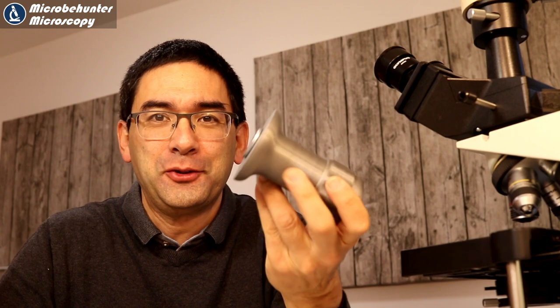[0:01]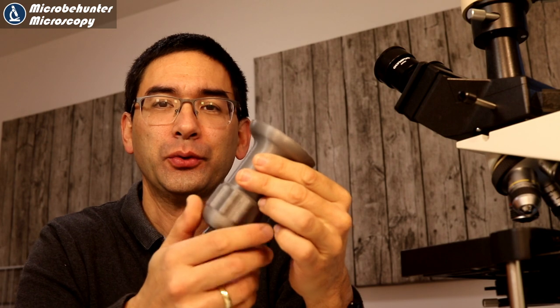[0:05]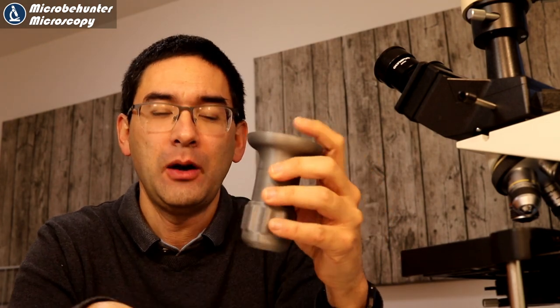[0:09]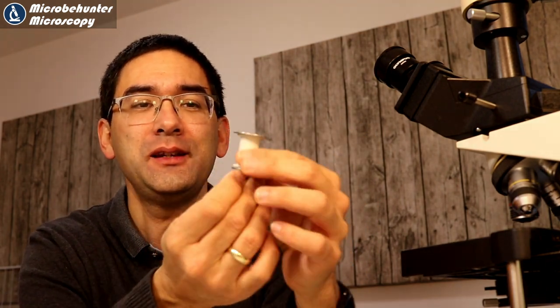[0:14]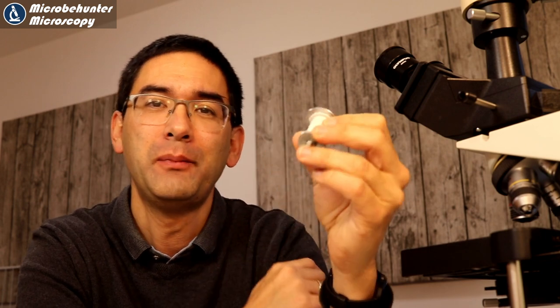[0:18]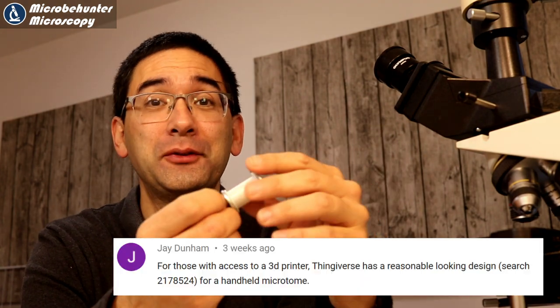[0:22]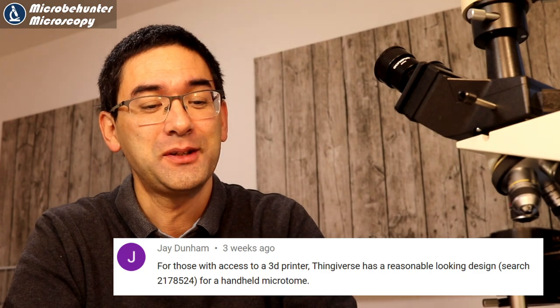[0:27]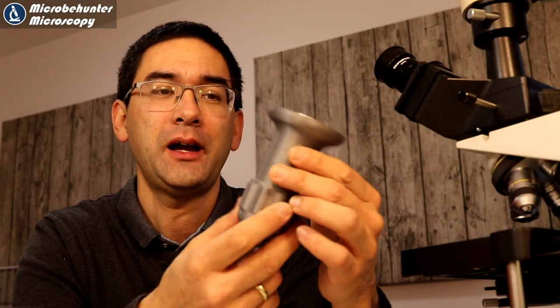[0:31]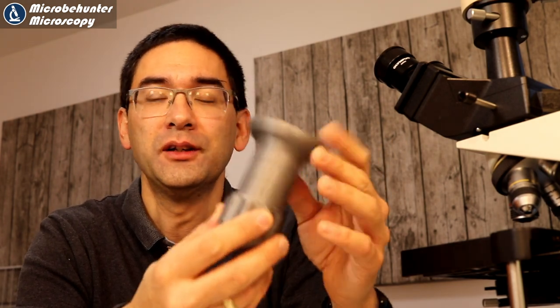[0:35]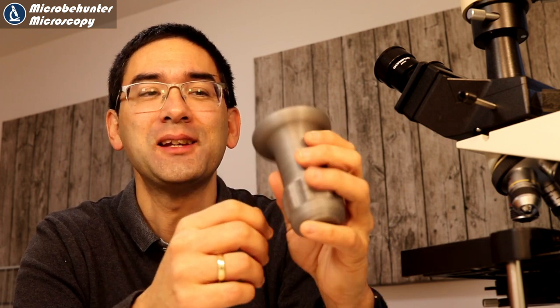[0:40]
In a previous video I already showed you how to make this small do-it-yourself microtome, and one of my viewers actually wrote a comment and said that if you have a 3D printer then you could also print your own microtome, and this is what I've done. So I downloaded the file for this microtome and I 3D printed it, and I'm going to show you how I have done that, and then at the end I'm also going to test whether it actually works sufficiently well.
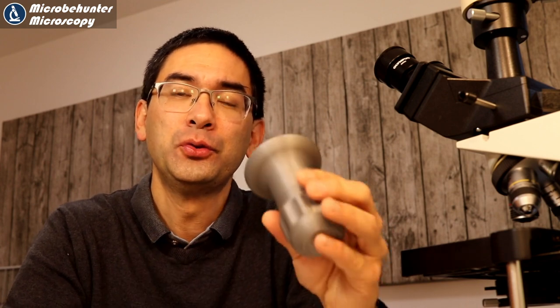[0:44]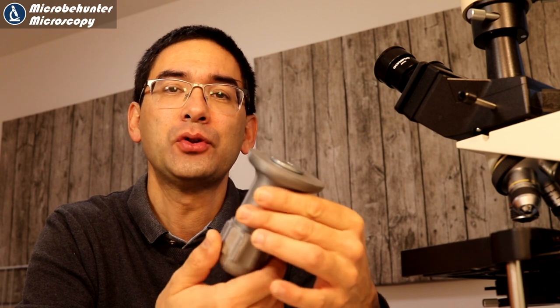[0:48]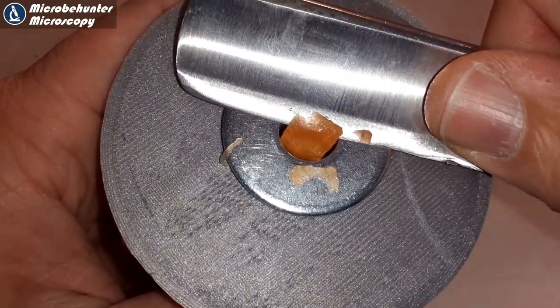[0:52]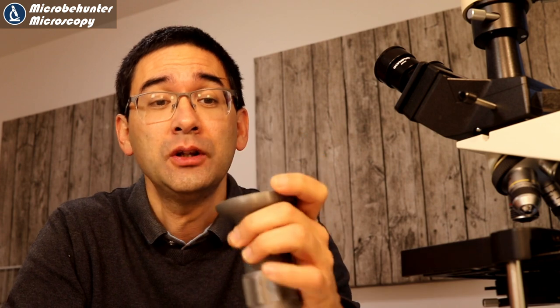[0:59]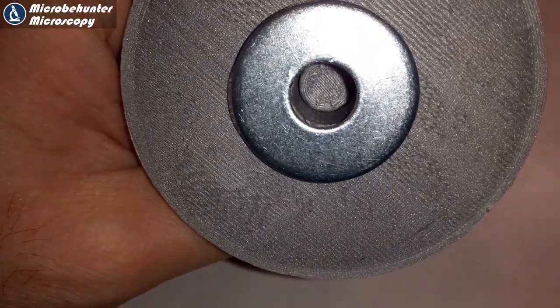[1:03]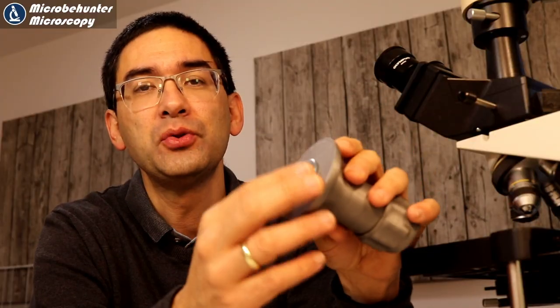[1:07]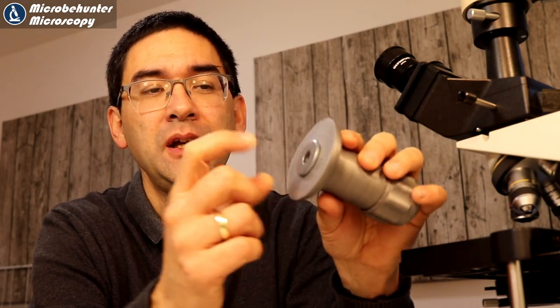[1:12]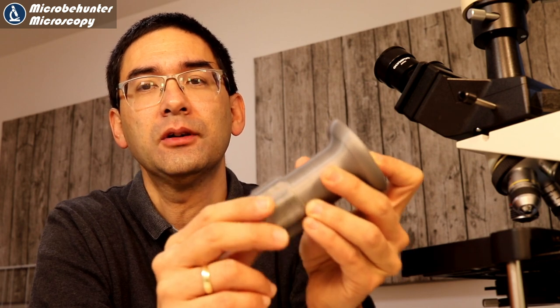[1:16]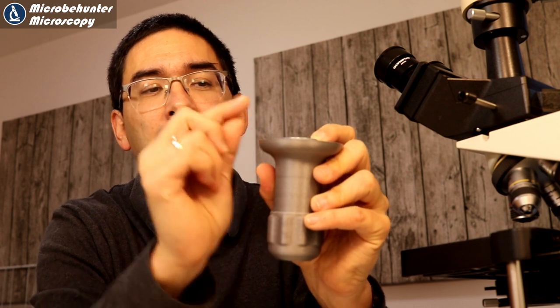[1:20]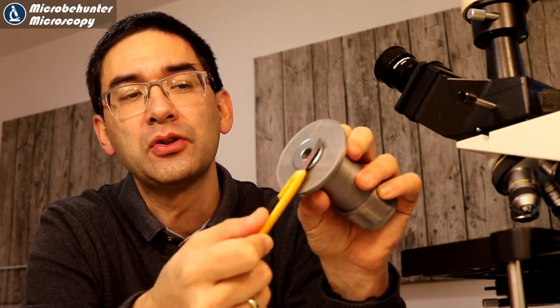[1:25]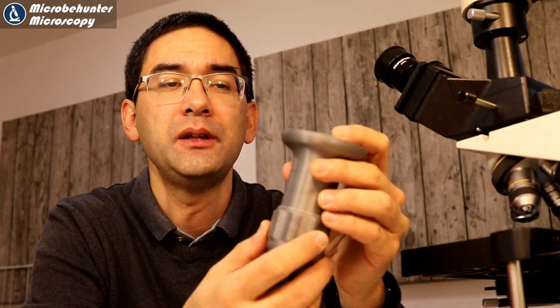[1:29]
First of all, for those of you who do not know what a microtome is, you use microtomes for microscopy to make very thin cuts of tissue. You need approximately a one cell layer thick section, and what you do is, there is a hole here in the microtome and you put the specimen into the hole. For example, I'm going to be using a carrot because that's quite a suitable one to cut. You put it in here, and by turning the handle down here, you advance the specimen out a little bit, and then you are able to use a sharp knife to slice it, and this can give you extremely thin cuts.
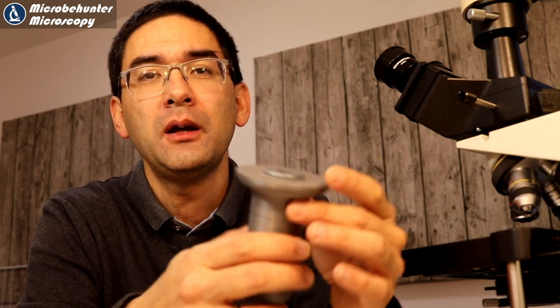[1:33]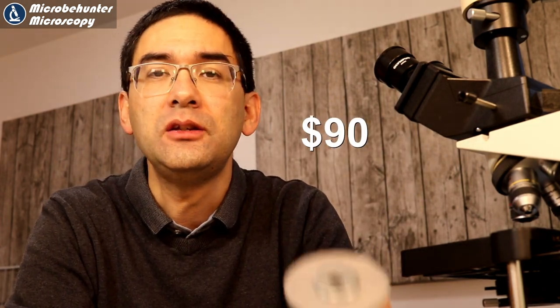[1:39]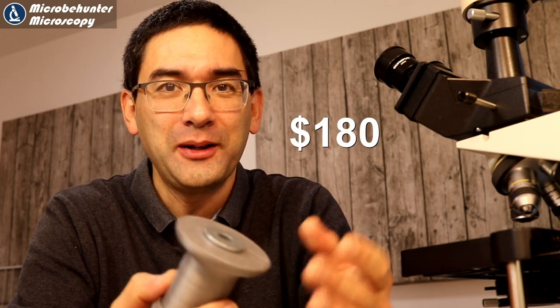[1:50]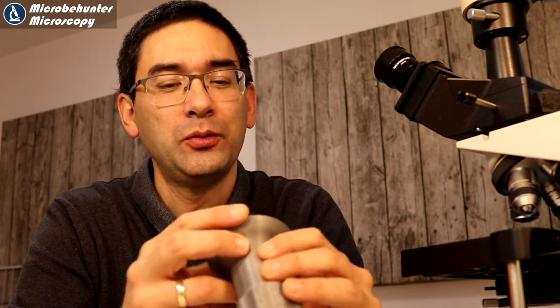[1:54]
Now there are of course commercial microtomes available. Low-cost commercial microtomes cost around, I've bought some for about 70 to 80 euros. But if you already have access to a 3D printer, which mine cost only about twice as much, 150 to 160 euros, so they're quite cheap already, it's also something that you might want to try, and I also wanted to simply try it out. So let's get started.
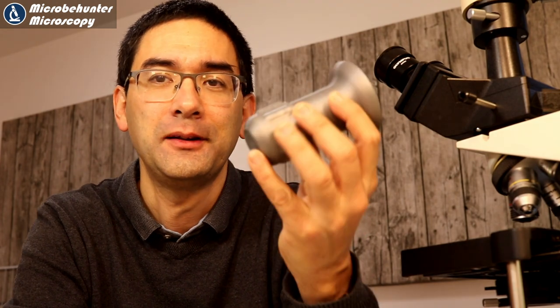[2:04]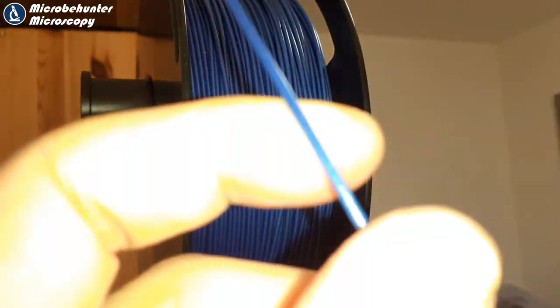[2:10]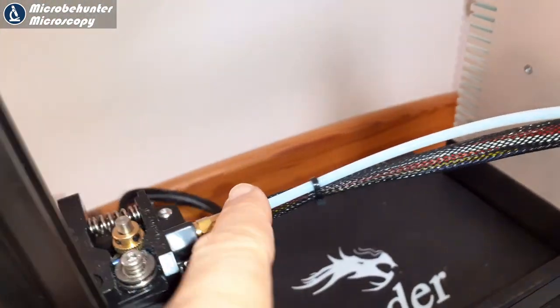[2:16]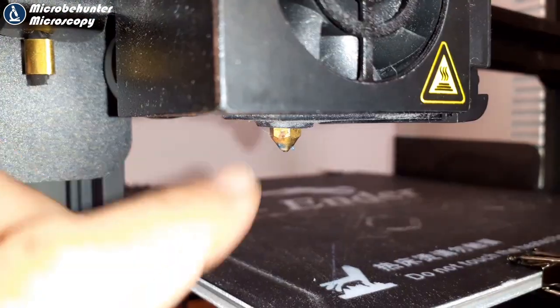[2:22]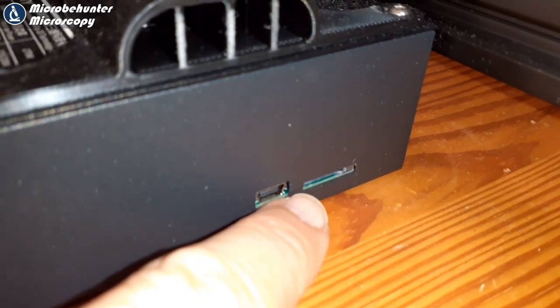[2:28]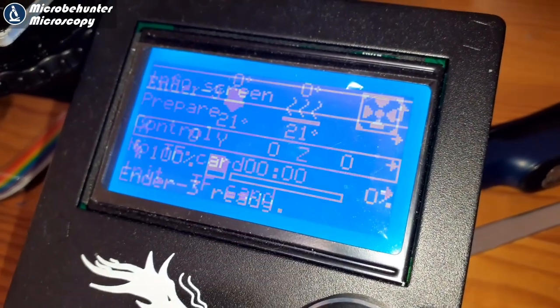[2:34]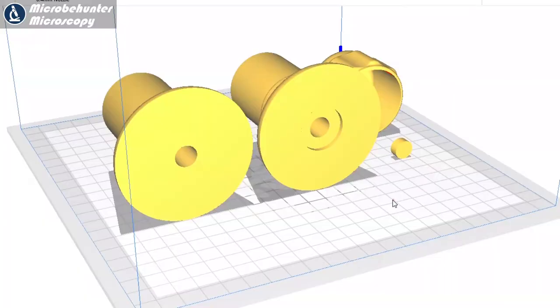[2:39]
I'm first going to show you my 3D printer and how that works, and then I'm going to be 3D printing this microtome. The name of the plastic used is PLA. It melts at a temperature of around 200 degrees centigrade. It's fed into the 3D printer on one side here, goes in this tube all the way down to the nozzle, and it's the nozzle that heats up to 200 degrees. And then a little bit like a glue gun, it extrudes the molten material. There is an SD card reader, so the file that is supposed to be printed is directly put into the computer of the 3D printer, and there is also a control interface where you can make all of the necessary adjustments. Well, I downloaded the file from Thingiverse.
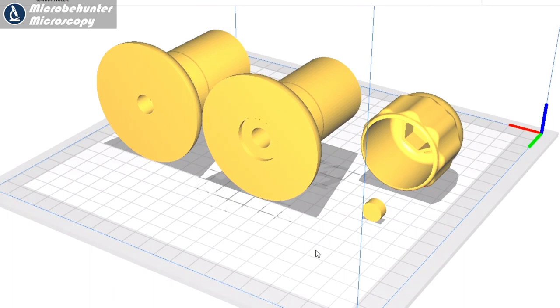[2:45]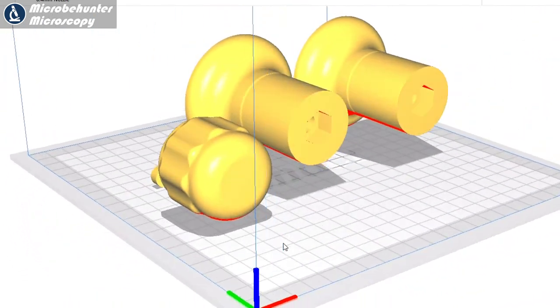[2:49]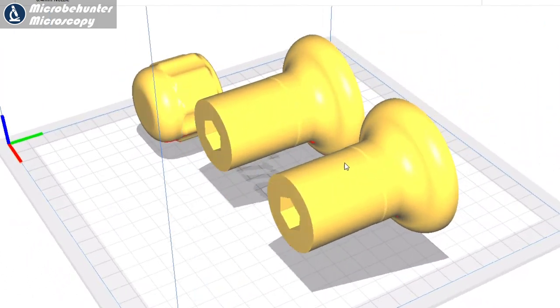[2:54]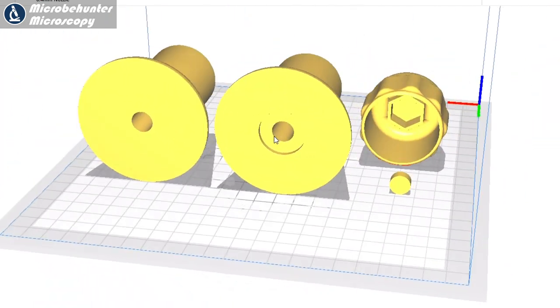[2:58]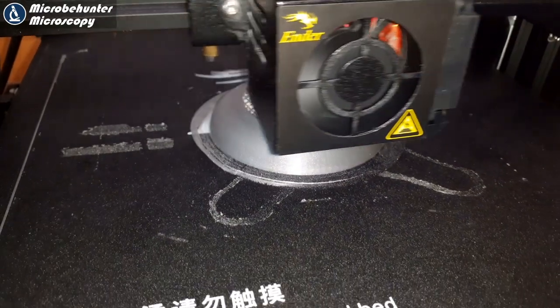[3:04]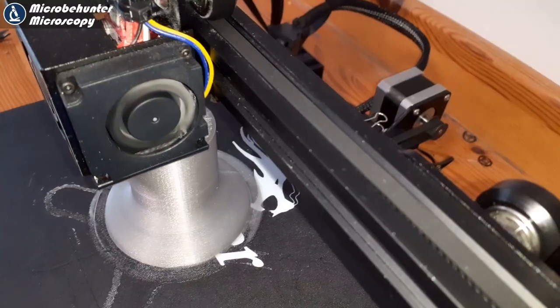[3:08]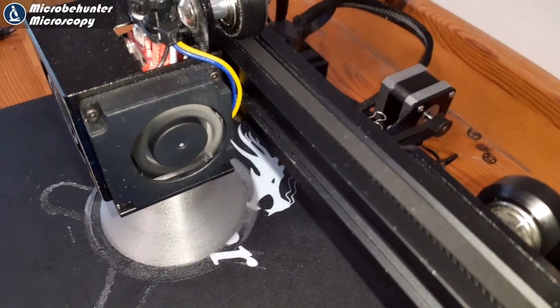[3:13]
Thank you to the person who designed this microtome. As you can see, there are two different versions here. I'm going to talk about this a little bit later. I have chosen one version, and in this program, you prepare the file for 3D printing. There are three parts to this microtome. Printing the microtome actually took quite a long time, several hours. I did speed up the printing process, but then the quality was not so good. It was not quite as regular, but it's fine.
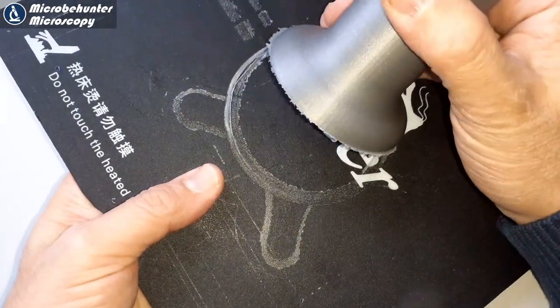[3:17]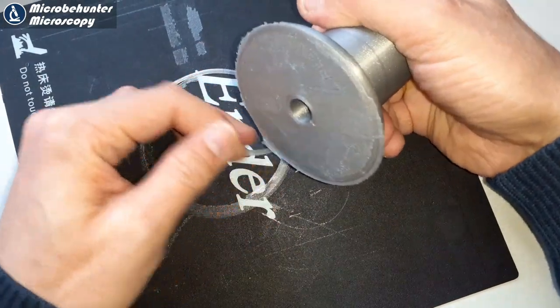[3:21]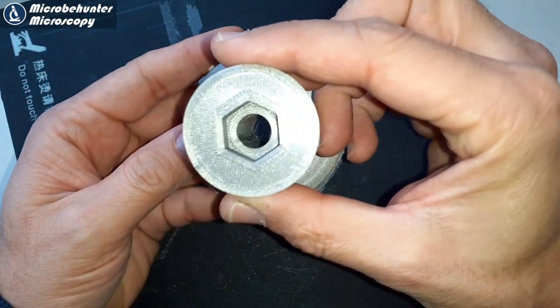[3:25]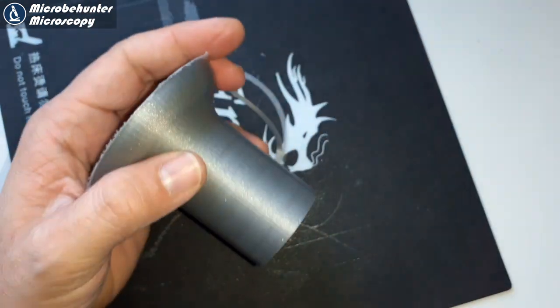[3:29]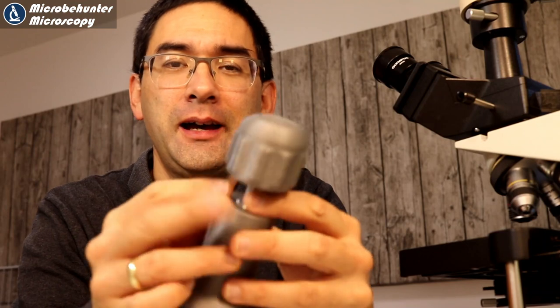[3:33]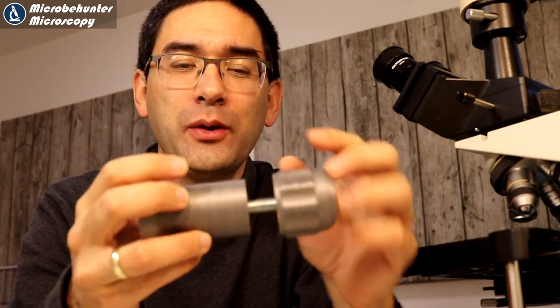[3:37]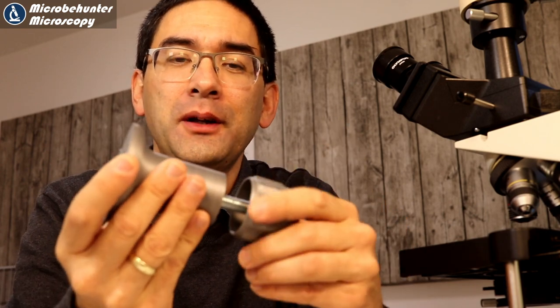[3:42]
You have to take it off here. It sticks to the platform, and you remove all of the excess plastic that's not necessary. It gives me a very solid and a very good impression, and a very useful thing, I think. Initially, I had some problem finding a screw of the appropriate length, so I had to check several hardware stores, but luckily I found one.
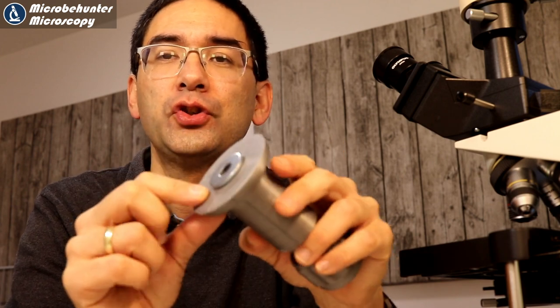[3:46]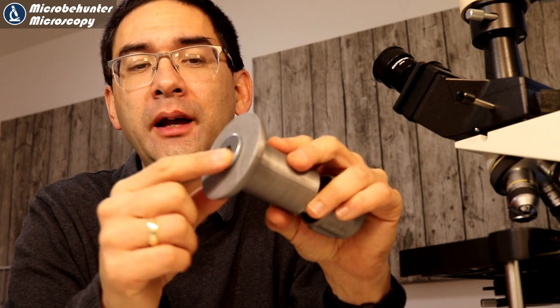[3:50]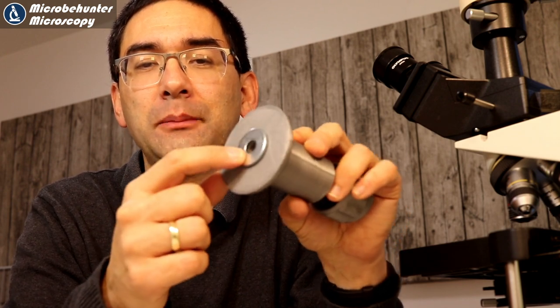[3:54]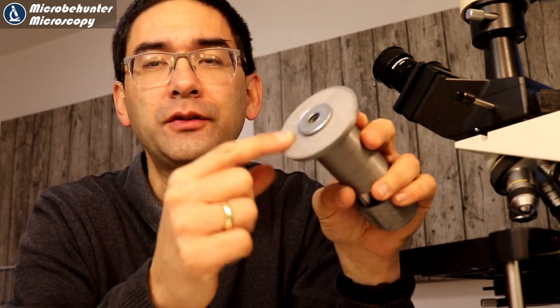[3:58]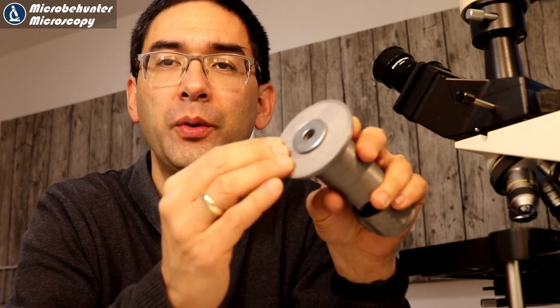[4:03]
Another thing I just wanted to mention is that there are two versions of this microtome available. You can see that right now I attached the washer here on top of the surface, so it's a little bit higher than the rest of the platform. But there's another version where the washer is flush with the platform.
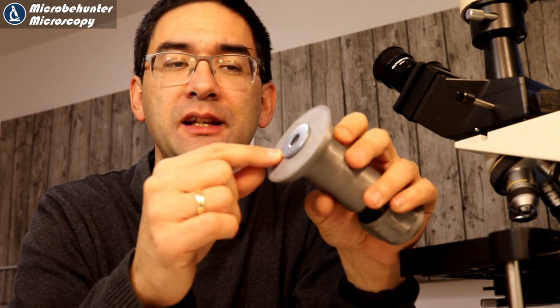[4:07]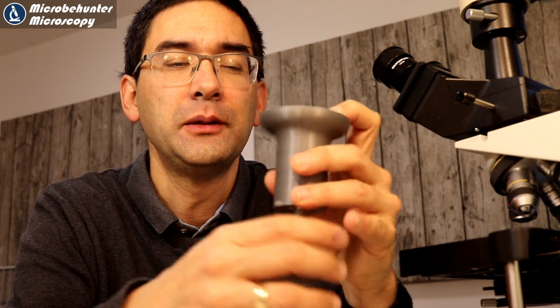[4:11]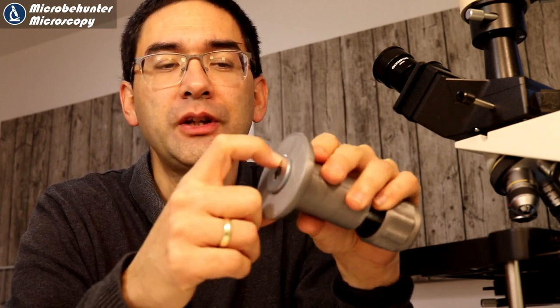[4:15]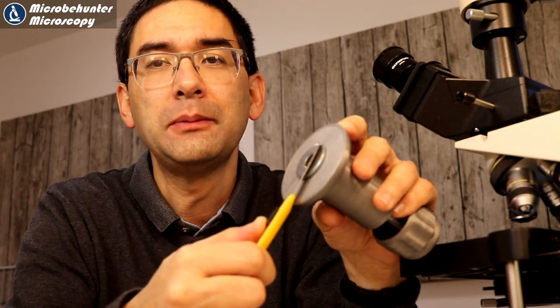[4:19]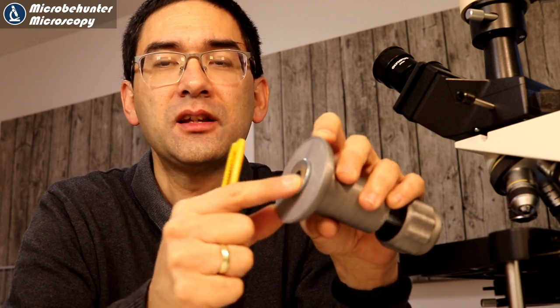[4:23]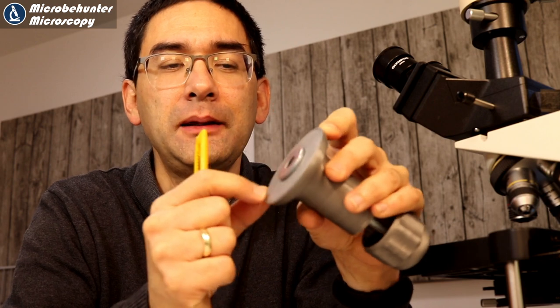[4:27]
I chose this version because I did not know about the washer size, and it gave me simply more flexibility concerning that, but ultimately I think it's a little bit a question of taste. One of the problems that I found out, however, with this washer is that when you glide the knife over it, there seems to be a lot of friction, and I think it's not as smooth as it could be or should be, so I might need to sand it a little bit, but otherwise I think it's gonna work.
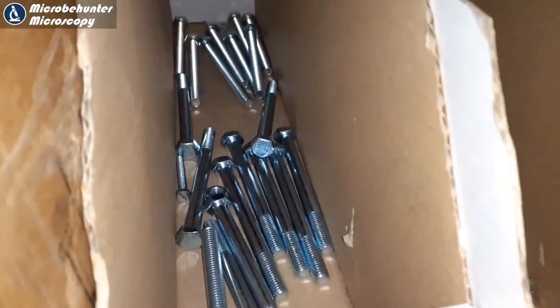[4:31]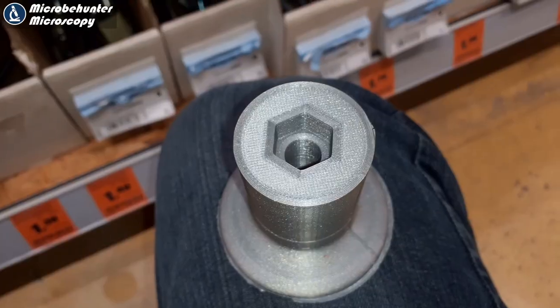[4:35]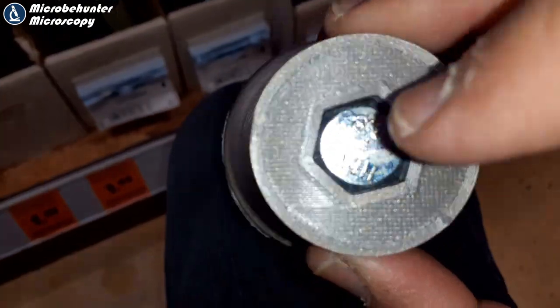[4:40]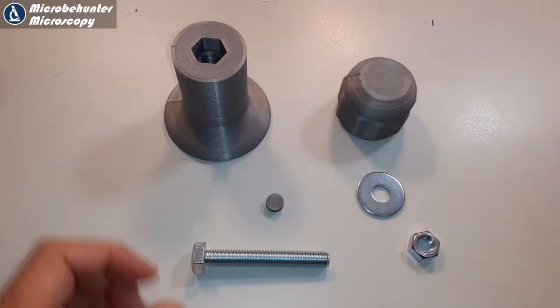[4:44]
So I went to the hardware store to buy all of the remaining parts that are needed, and I was testing them whether they actually had the correct size. This one here fit in, but it was way too long, so I have to go for a shorter one. And here, these are all of the parts that you need.
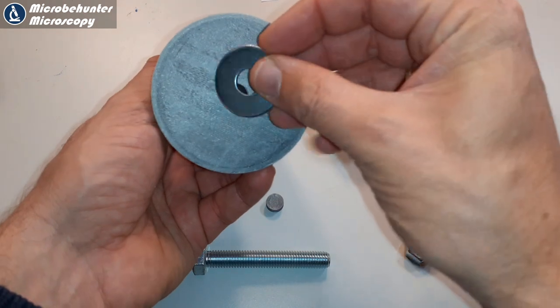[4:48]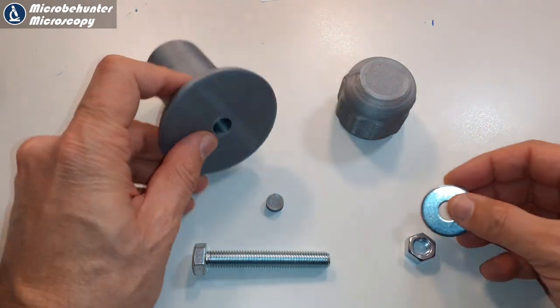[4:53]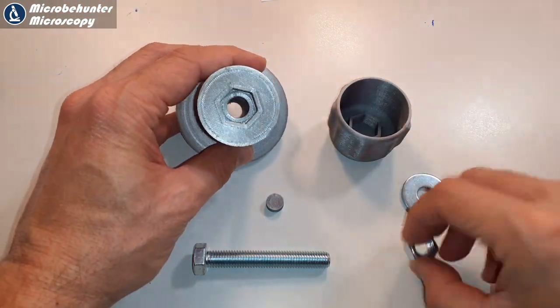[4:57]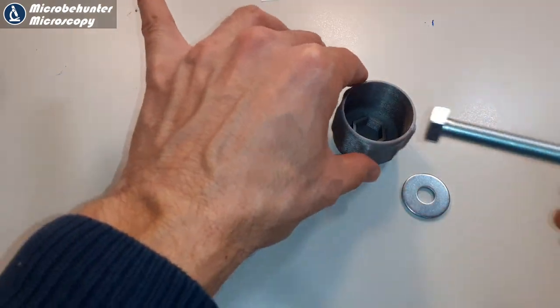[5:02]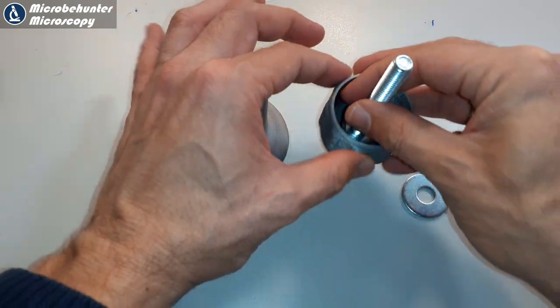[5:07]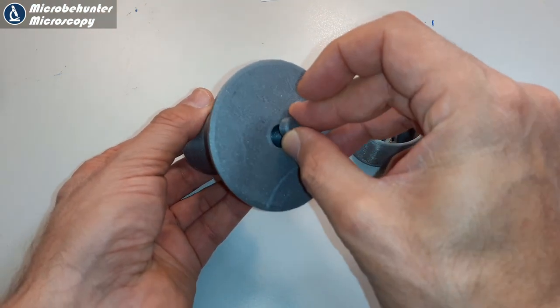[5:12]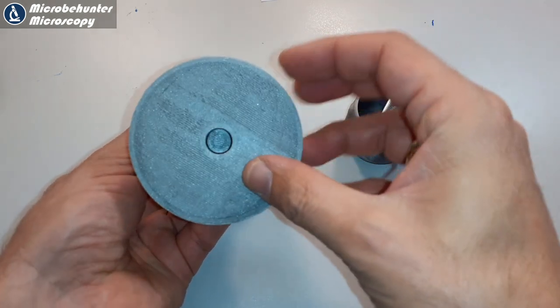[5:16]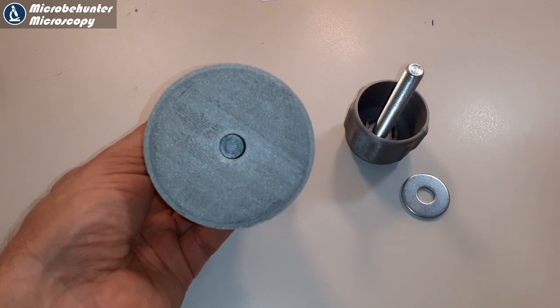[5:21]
There are three 3D printed parts. The washer goes on top here. This will be the place where you glide the sharp knife over the specimen. And then also the main part and the handle have to be connected. And there is a nut that goes into the body of the microtome, and the bolt, the screw, goes into the handle. I will be using hot glue to glue it in. I did find out, however, that this does not always hold very well, so maybe epoxy would be a better solution. Yeah, and there's also a little plug in here that goes between the bolt and the specimen.
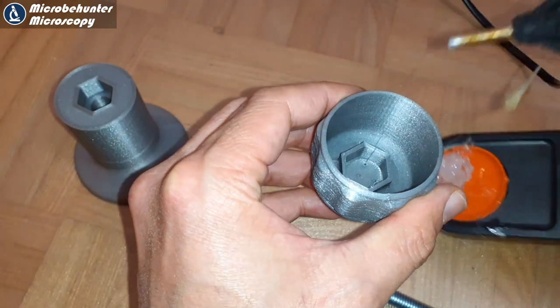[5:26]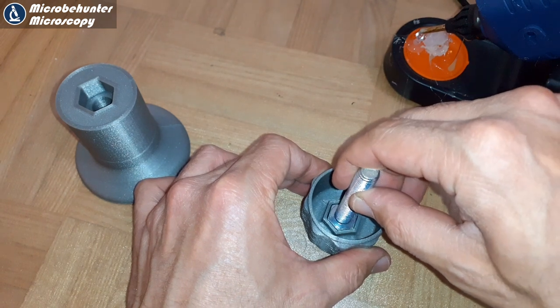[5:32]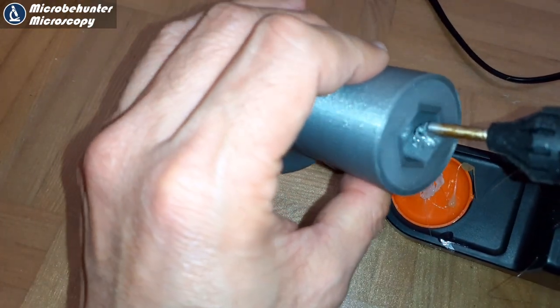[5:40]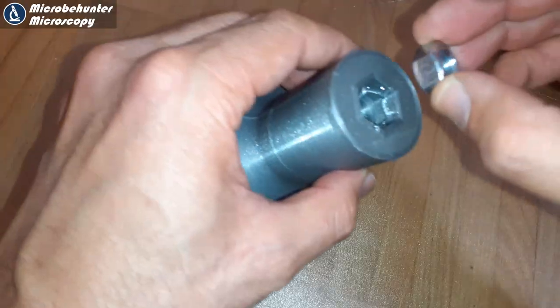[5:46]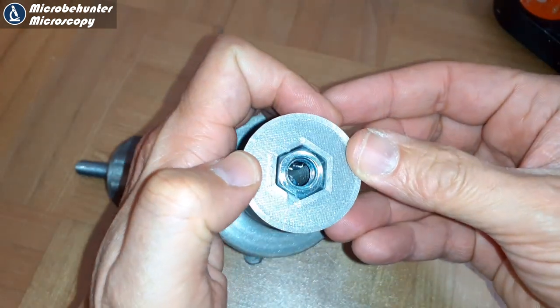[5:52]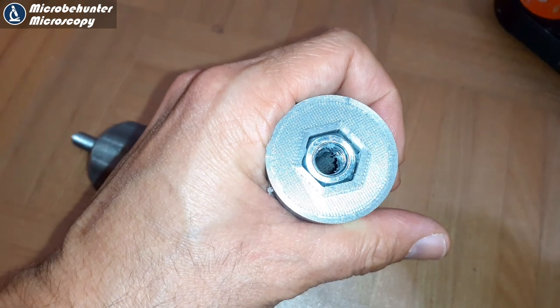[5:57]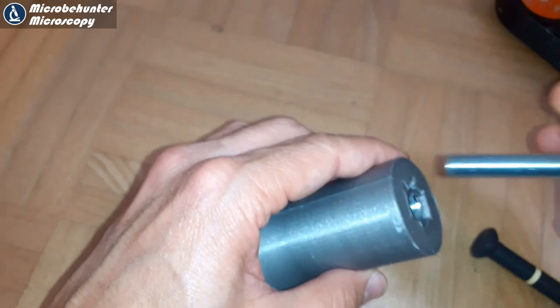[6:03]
Yeah, so I'm now using a hot glue gun to glue the parts together. I simply did it like this. Maybe it would have been good to also preheat the screw a little bit, but it also worked like this. Then also on the other side, I also wanted to hold the nut in place. So I had to use some excess glue here, but the problem was that it actually then also spread, and then I had to use a screwdriver to remove all of the excess later on to clean everything off again. But ultimately it did work quite well. So let's try it out.
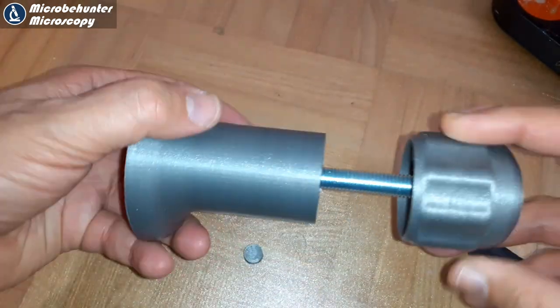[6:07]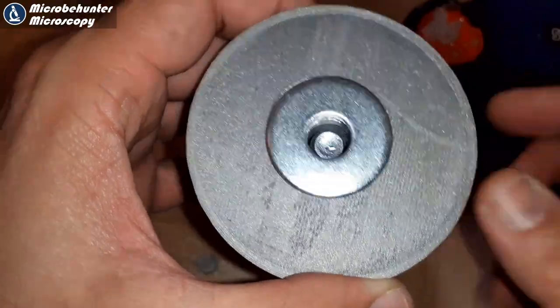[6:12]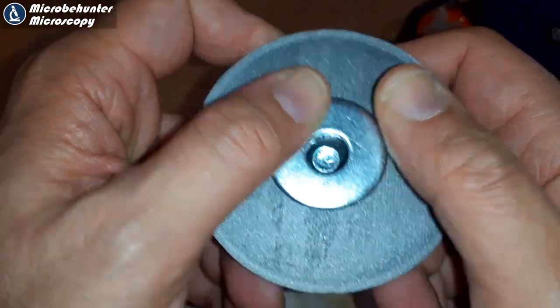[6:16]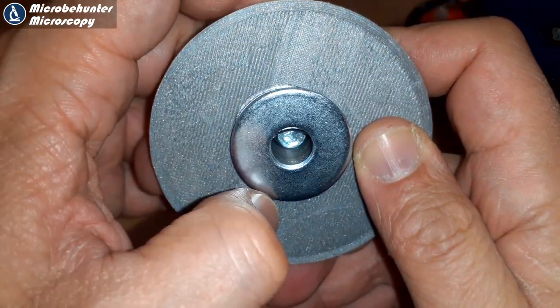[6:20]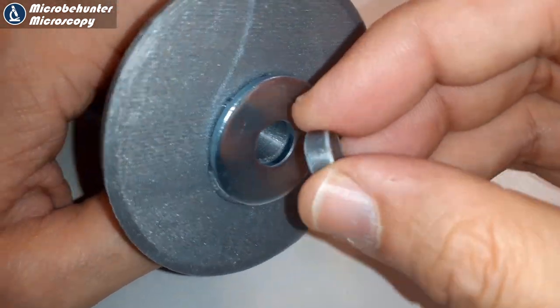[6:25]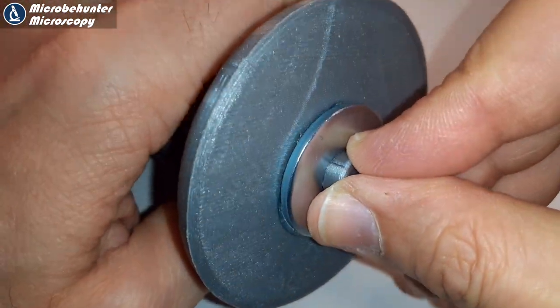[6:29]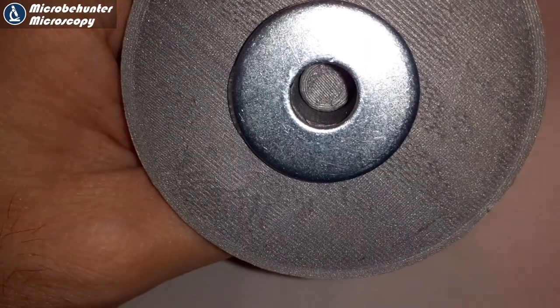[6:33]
This goes in here, of course, and then I discovered that it was actually quite easy to turn. Yeah, and this is how it looks like. I also attached the washer, and you can see that it is higher than the rest of the platform. So there's also a little plug that goes in there. I think this one is actually optional. At the beginning I had some problems pressing it in, but then with a little bit of force I was successful. Okay, so this is basically how it looks like. So now let's try it.
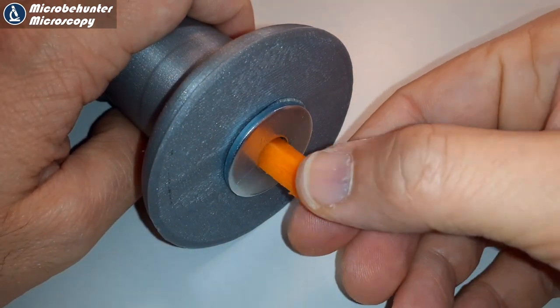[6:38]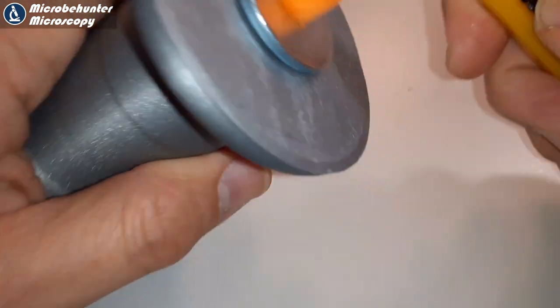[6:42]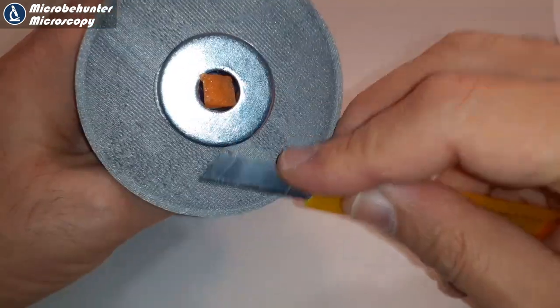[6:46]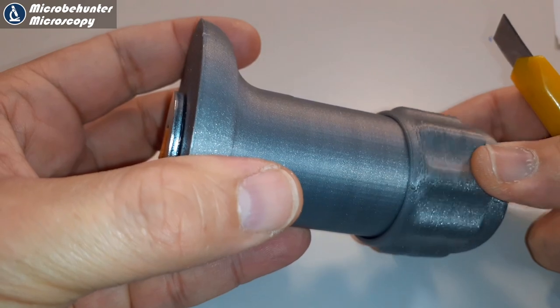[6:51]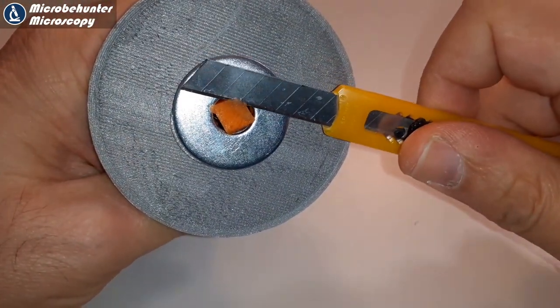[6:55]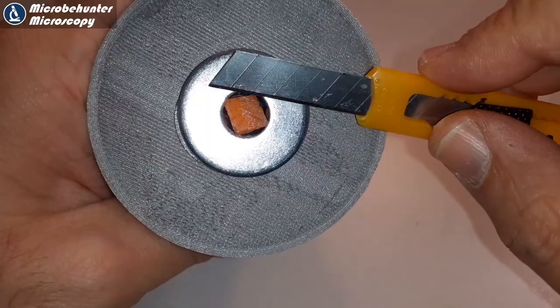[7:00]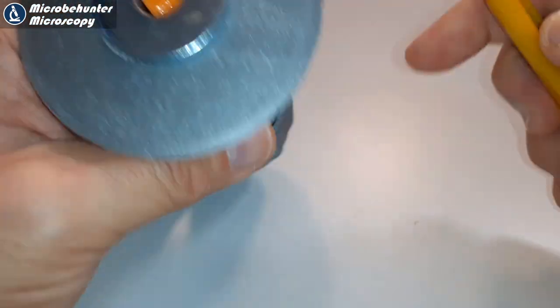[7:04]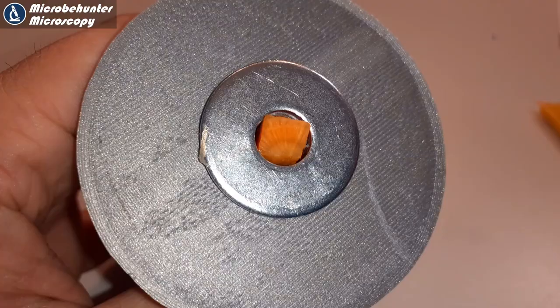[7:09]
I put a piece of carrot in there, and using a sharp knife I tried to do my first cuts. And I discovered quite quickly that the knife was not sufficiently sharp. And the first cuts were not quite successful, because I found out that the knife actually lifted out the carrot a little bit. So it was actually cutting deeper than it should have. You see, even though I turned it out, it was kind of gliding over it, because the edge of the knife could not catch the carrot.
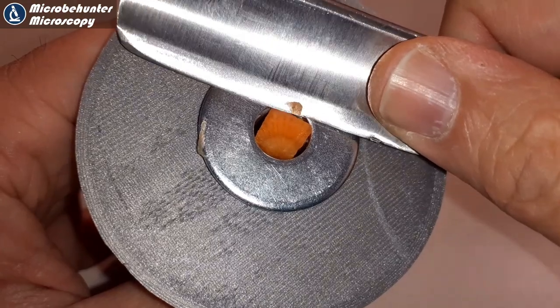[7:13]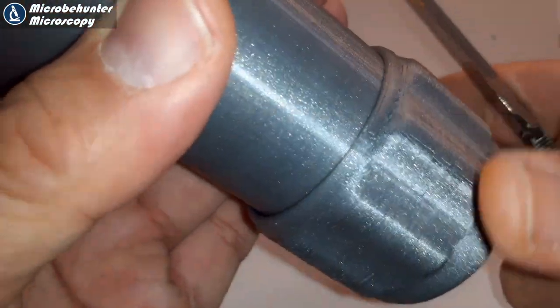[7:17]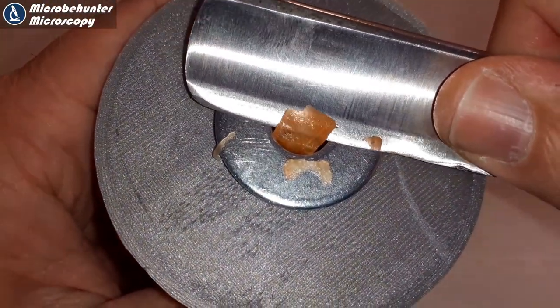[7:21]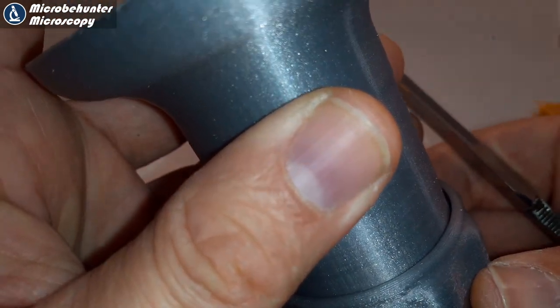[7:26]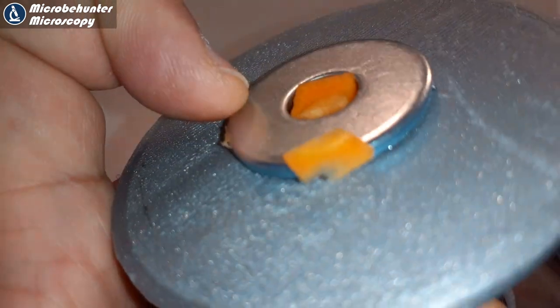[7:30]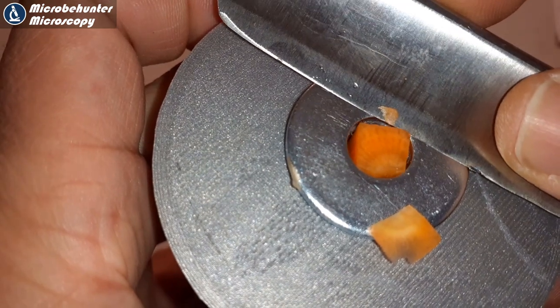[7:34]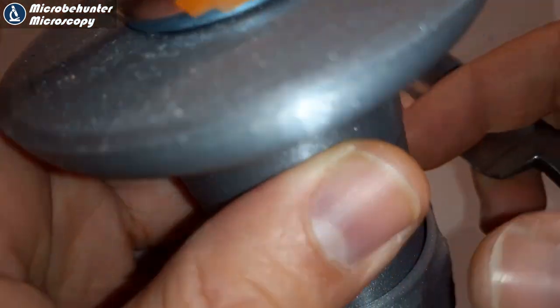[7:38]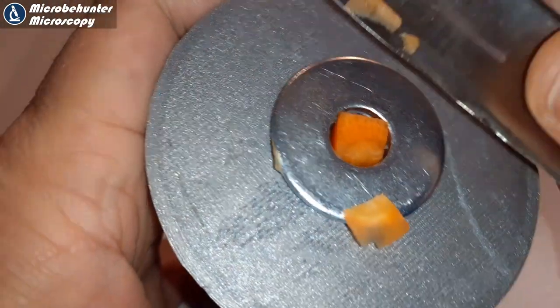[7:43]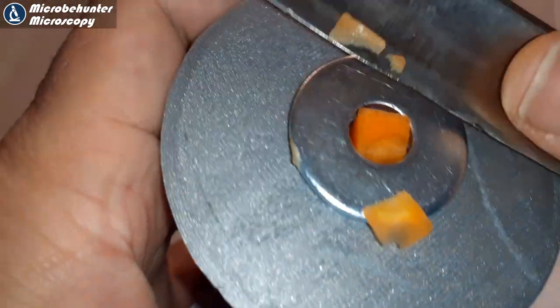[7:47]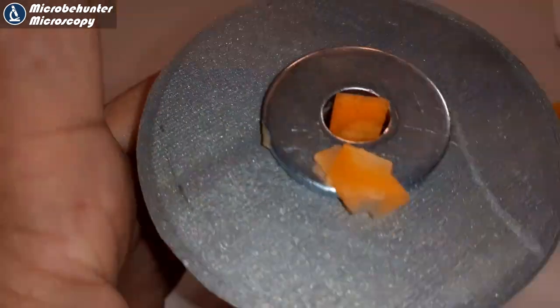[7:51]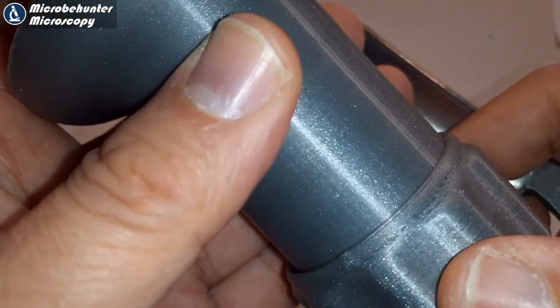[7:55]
Well, I'm now using a different knife, one that is less flexible, maybe also a little bit sharper, and it did work better, as a matter of fact. And the cuts that I received this way were a little bit thinner as well. But I think one of the reasons is because the cutting board knife that I used before was already a little bit old. I should have exchanged the blade. But I still found that advancing the specimen upwards was not always as reproducible as it could be, because sometimes the carrot got a little bit stuck because the carrot itself is also a little bit flexible. Then even though I turned the handle, it did not always advance the carrot. So this is one of the disadvantages of this type of microtomes.
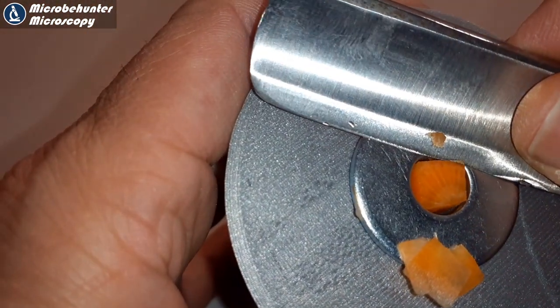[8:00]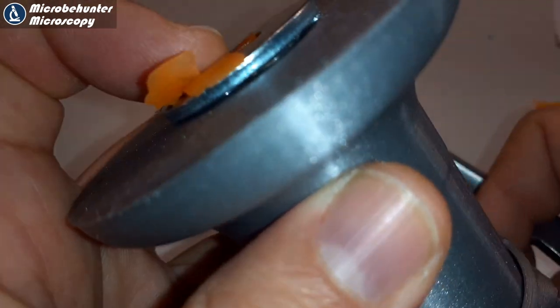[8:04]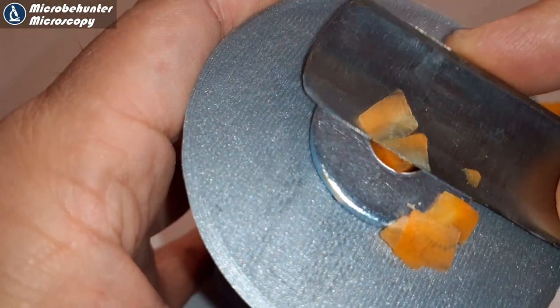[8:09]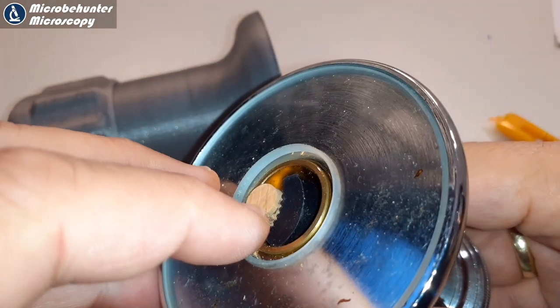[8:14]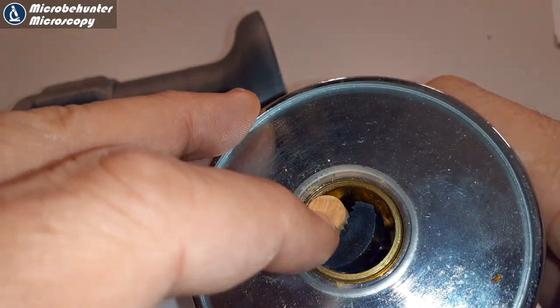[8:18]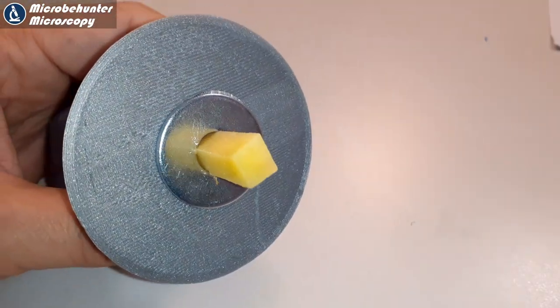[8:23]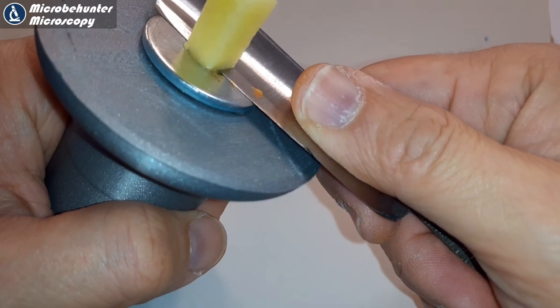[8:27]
There is a commercial microtome that I'm going to show you just in a second, for which I paid around 70 to 80 euros, so around maybe 90 US dollars. And this commercial microtome has a clamp. So I'm just going to show you now how this looks like. Yeah, that's the commercial one. And you see there's a black plastic clamp in there. I'm holding now a piece of cork that I was microtoming. And this gave the whole thing much more stability, of course. Now that's a potato. And I also found that the potato was easier to cut.
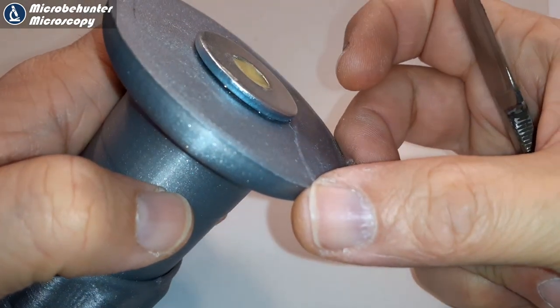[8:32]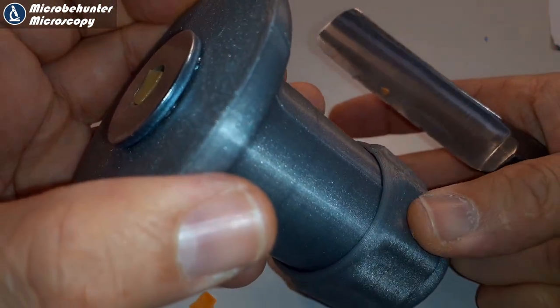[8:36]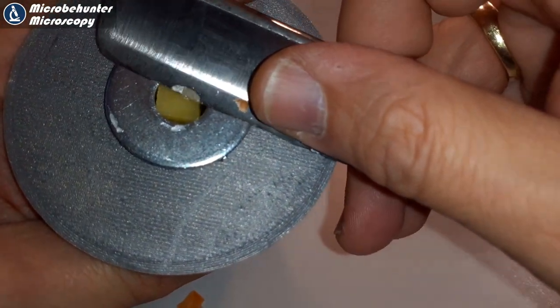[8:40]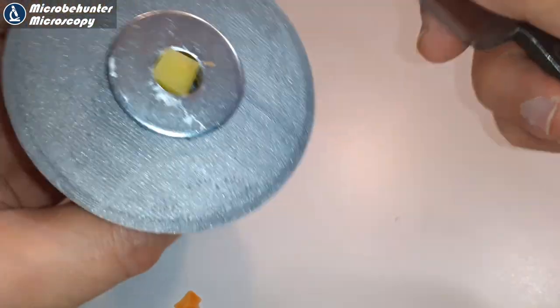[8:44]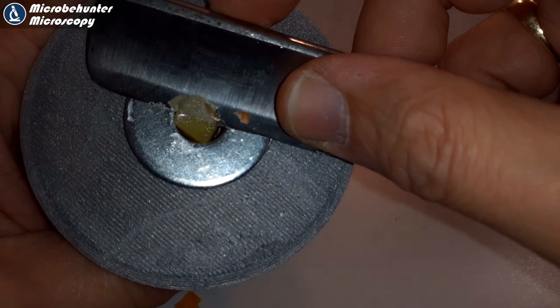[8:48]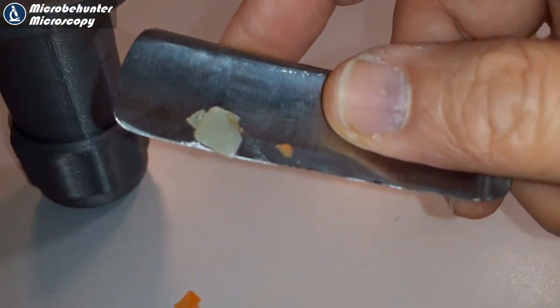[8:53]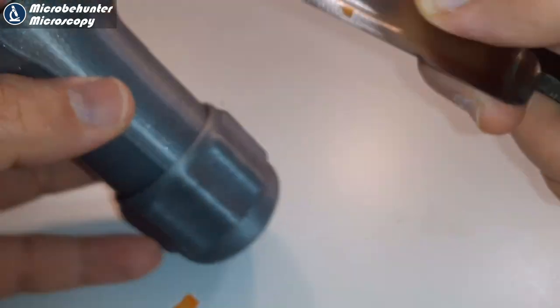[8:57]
This also kind of shows that it's not only the microtome or the presence of a clamp, but also the consistency of the specimen. Somehow the potato was significantly softer than the carrot. And this way I was able to get also slightly thinner sections. I'm just going to show you in a second how this looks under the microscope, of course. And we're going to see that indeed there are fewer cell layers in the potato. So I was able to get thinner cuts this way.
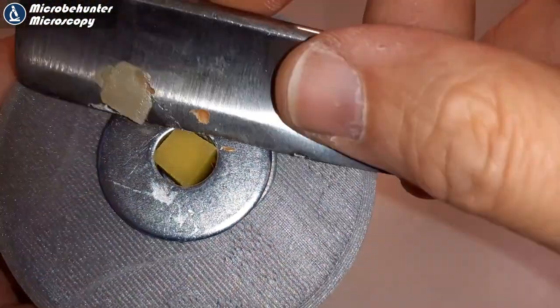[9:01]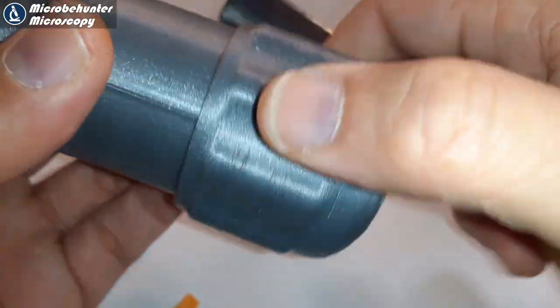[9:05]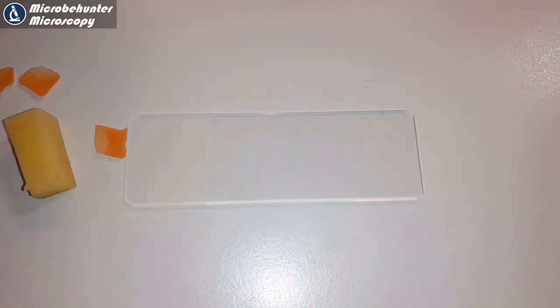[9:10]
But usually it's like this. You just have to try. If the results are not the way that you expect, go for quantity. Because this way the chances are higher that some of the specimens will be suitable.
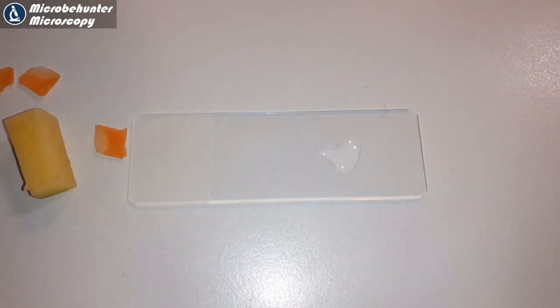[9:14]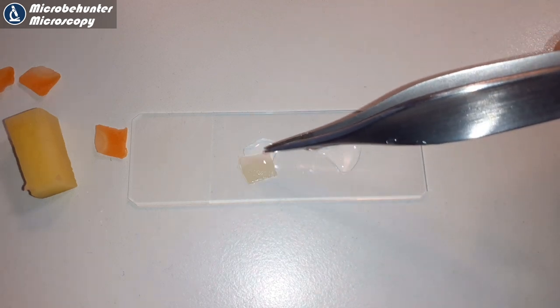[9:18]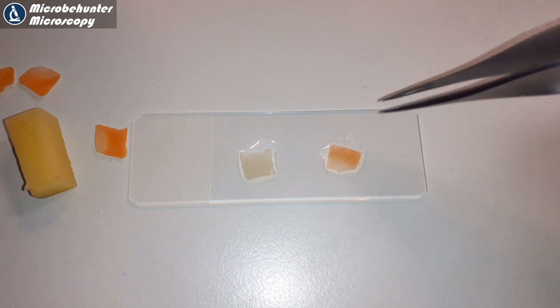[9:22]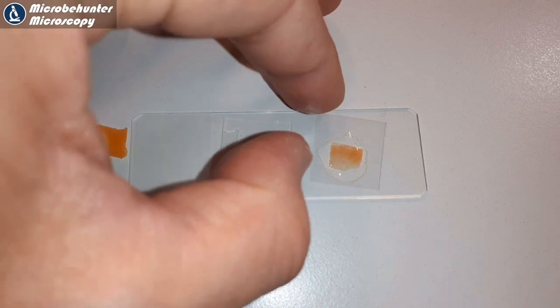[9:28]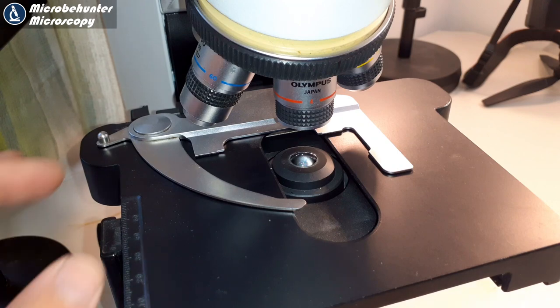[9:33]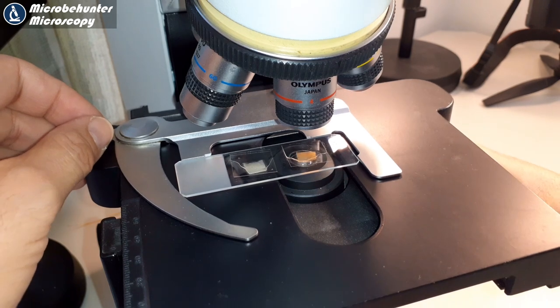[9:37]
So I'm simply going to put both of them on a slide like this, a droplet of water as a mounting medium. That's important for the refractive index. I'm mentioning this because there have been some questions from some of my viewers. So mounting medium like water and a cover glass are important. The optics are designed in such a way that the specimen has a cover glass and a mounting medium. That's the maths of the optics is like this, so to say.
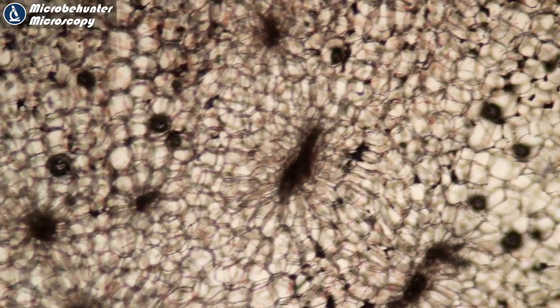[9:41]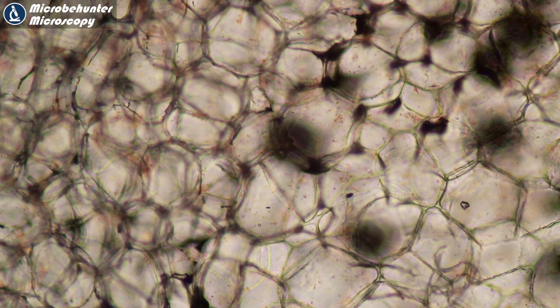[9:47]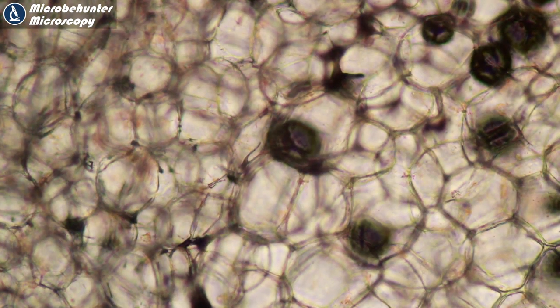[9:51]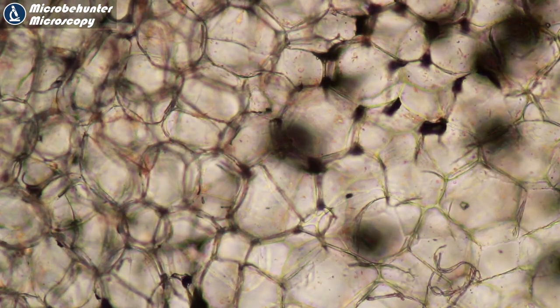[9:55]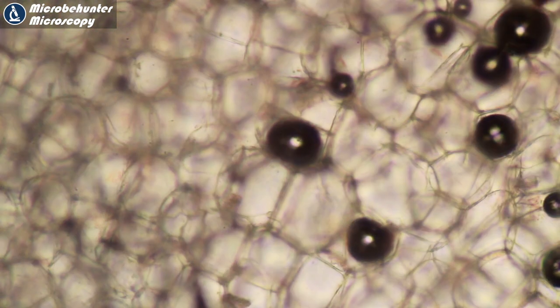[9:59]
And that's the carrot, okay? So we can already see the individual cells. I have to go in a little bit further with the magnification. And then what I'm going to do now is I'm going to focus through the whole section. I'm going to count how many cell layers I can see here. So maybe one, maybe then the next cell layer two, and then three. So I counted around three cell layers in the carrot.
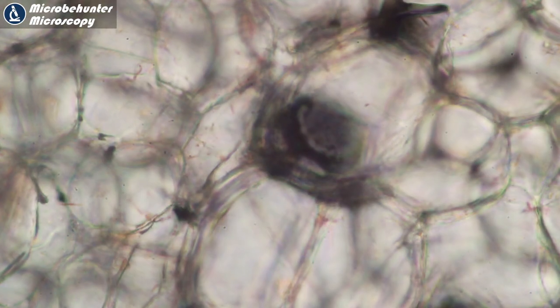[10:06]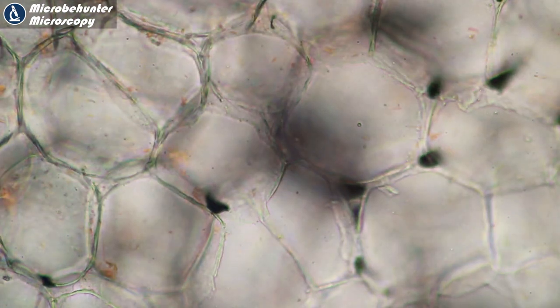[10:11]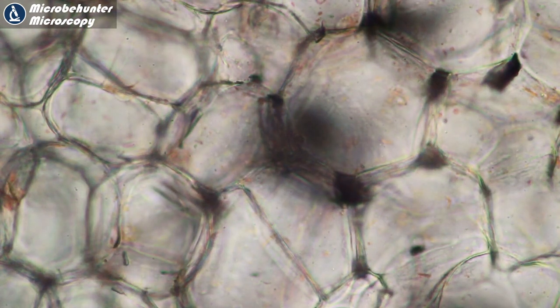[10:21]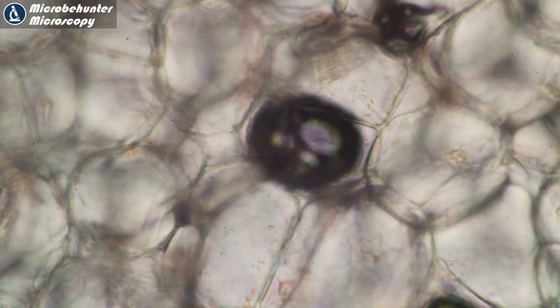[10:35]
These dark circles, these are air bubbles, by the way. So let's go in further. So that's one cell layer. Then when I focus, the second cell layer goes into focus, and I'm already out of focus. So let's try again. It's the first cell layer. I continue focusing. Now the second cell layer goes into focus slowly. And then also the third cell layer. So maybe two to three cell layers. It's not always quite easy to see, because we're of course dealing with a three-dimensional structure.
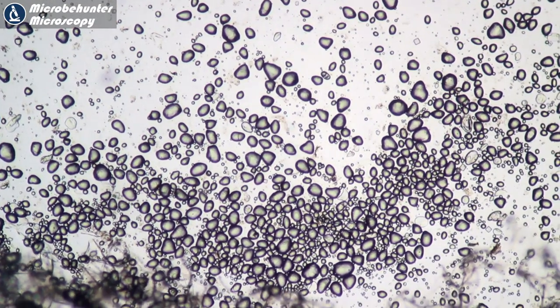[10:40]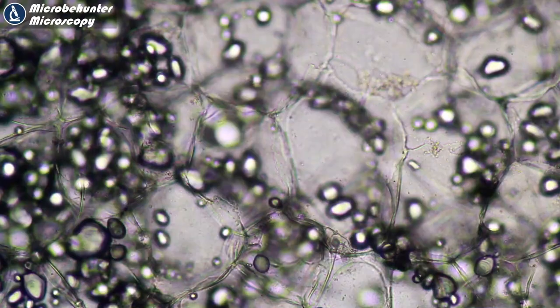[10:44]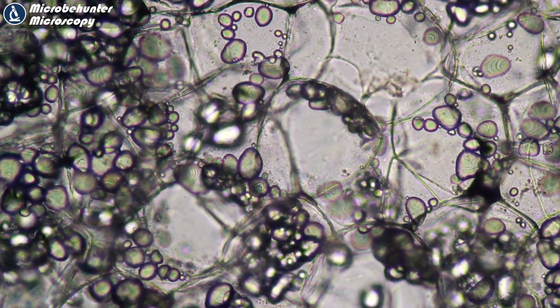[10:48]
And of course the potato, these are the starch grains of the potato. And they look quite nice. And I'm going to try a similar thing here as well. I'm going to focus through it, and I found that it was approximately two cell layers thick.
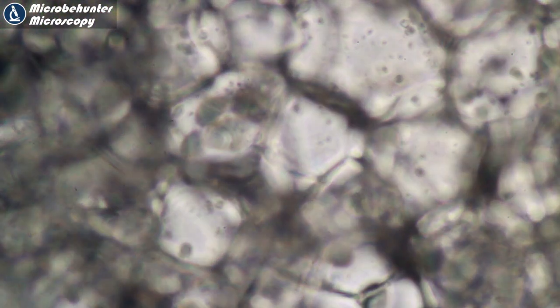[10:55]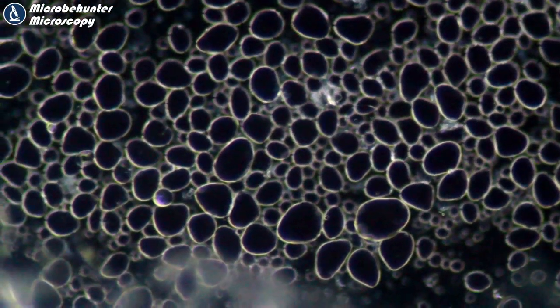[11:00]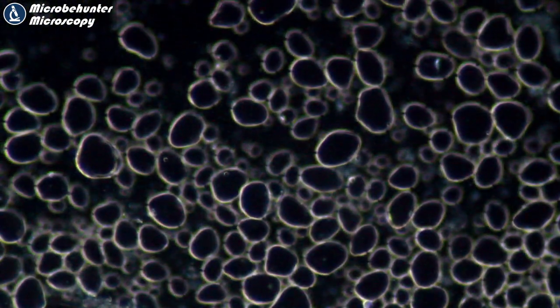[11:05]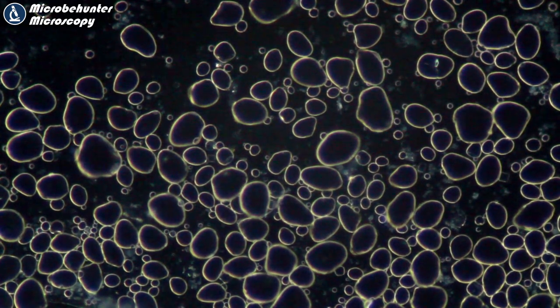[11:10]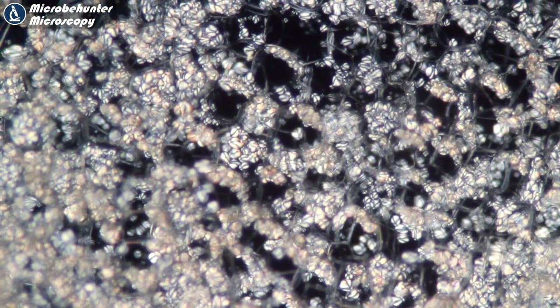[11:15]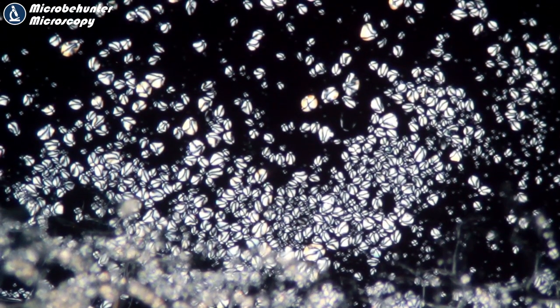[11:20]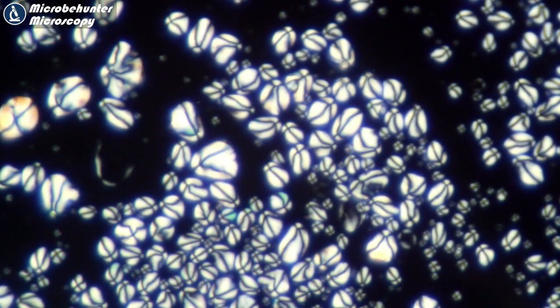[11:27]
Now I know you cannot look at a potato without trying different optical methods. So this is dark field. So the starch grains do look quite different here. Okay, so you do not see the cell walls so much anymore. And this here is of course polarization microscopy. You cannot look at a potato without polarized filters. It's just a given, so to say, because they just look so beautiful. But again, here we do not see the cells anymore, but the focus is on the starch grains. And there are plenty of things that you can try out. Well, check out my video that I made on polarization microscopy to see how I've done that.